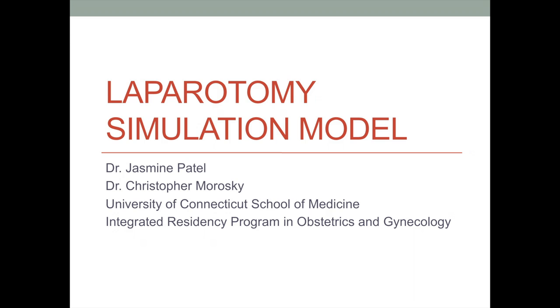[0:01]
Laparotomy Simulation Model.
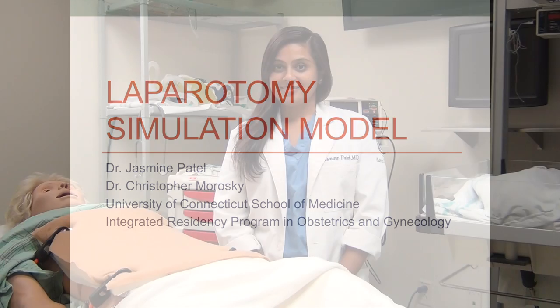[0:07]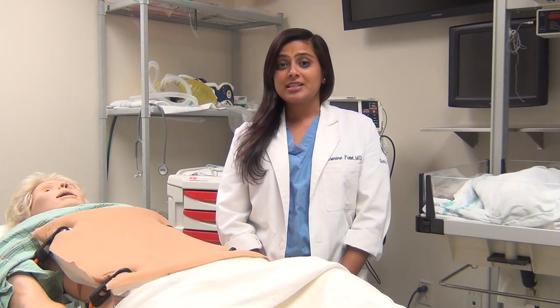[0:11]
Hello, my name is Jasmine Patel, and I am one of the obstetrics and gynecology residents at the University of Connecticut. In this video, we will introduce you to a simulation abdominal wall model that we use to teach our students and residents the techniques of laparotomy.
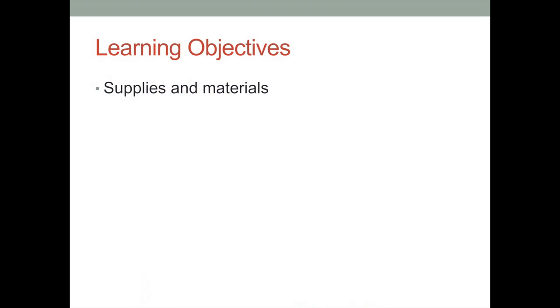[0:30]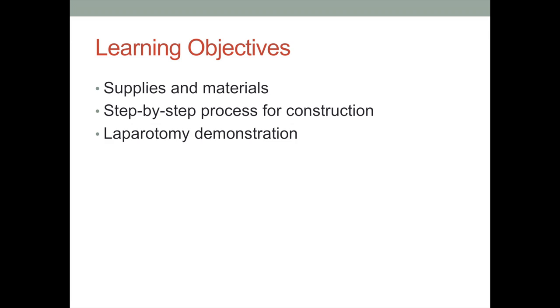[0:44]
The learning objectives of this video are as follows. Review the list of supplies and materials that you will need to create the laparotomy simulation model. Show the step-by-step process of constructing the laparotomy model. And demonstrate how the laparotomy model can be used to simulate a Pfannenstiel laparotomy.
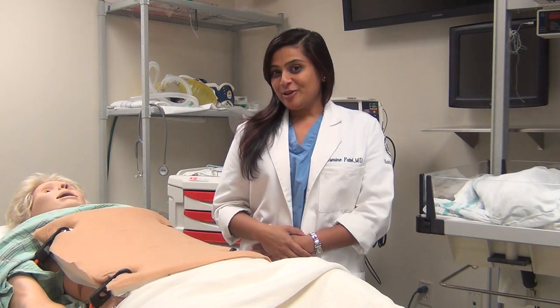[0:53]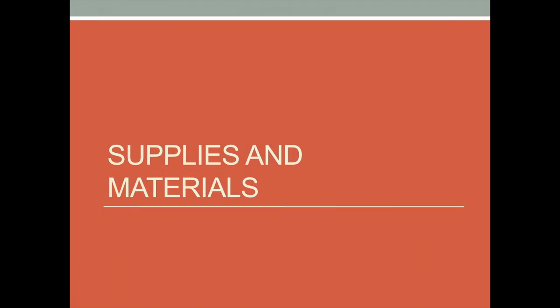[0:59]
The first thing that you will need to do is to plan a trip to your local fabrics or craft store. Now, we're going to take a look around and make a list of the items that you will need and about how much they will cost.
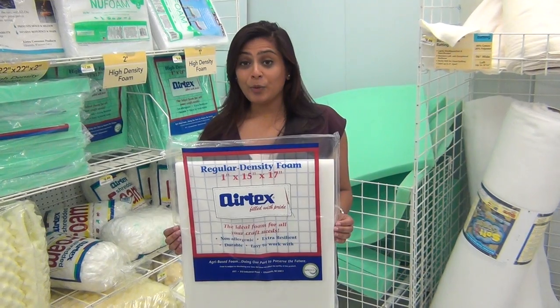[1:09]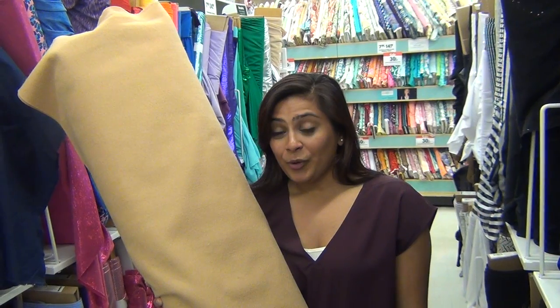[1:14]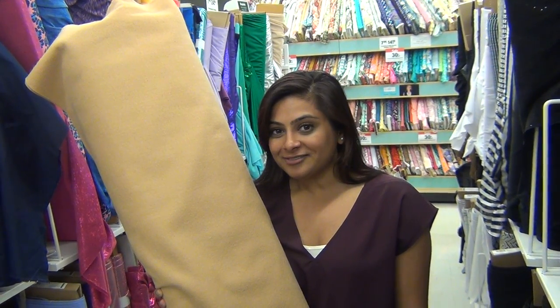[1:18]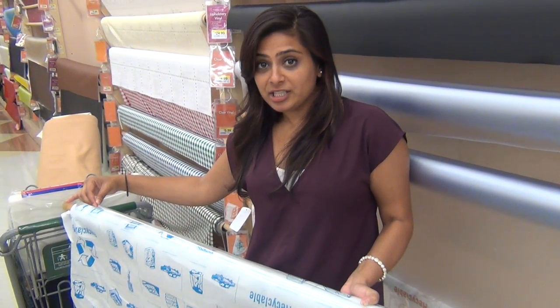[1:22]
1 1-inch regular density foam chair cushion. 1 20 by 20 inch piece of felt at about $6 per yard. 1 20 by 20 inch piece of 4-gauge clear vinyl at about $3 per yard. 1 20 by 20 inch piece of maroon headliner, about $11 per yard. 1 20 by 20 inch piece of blackout ivory curtain lining at about $7 a yard.
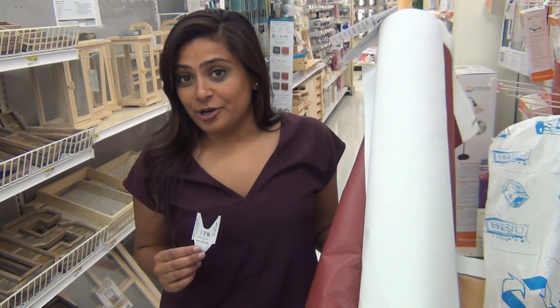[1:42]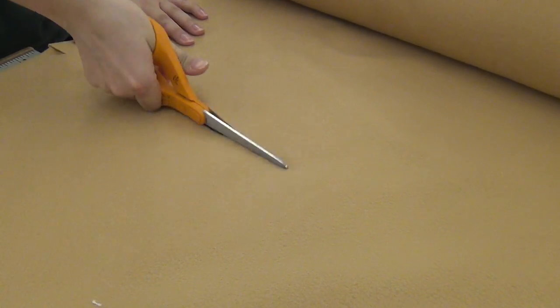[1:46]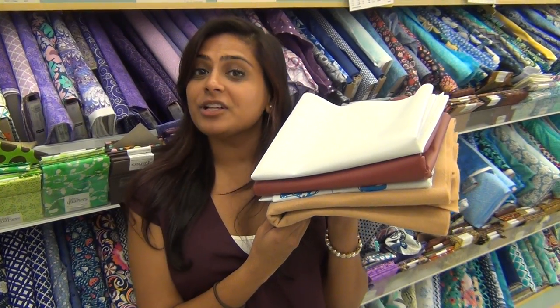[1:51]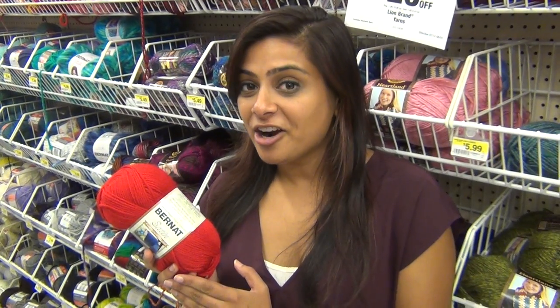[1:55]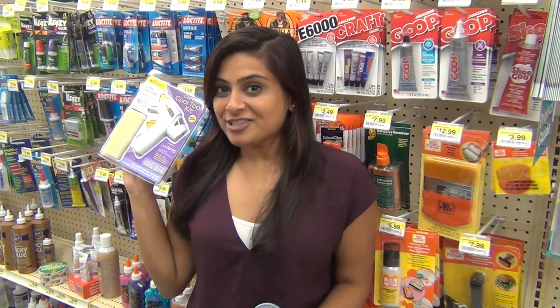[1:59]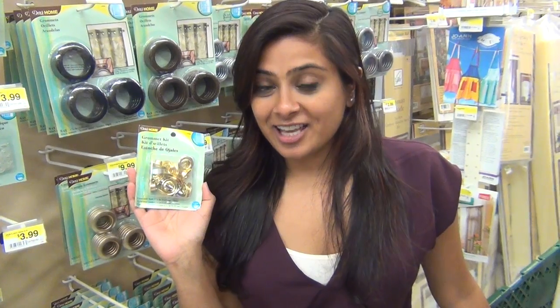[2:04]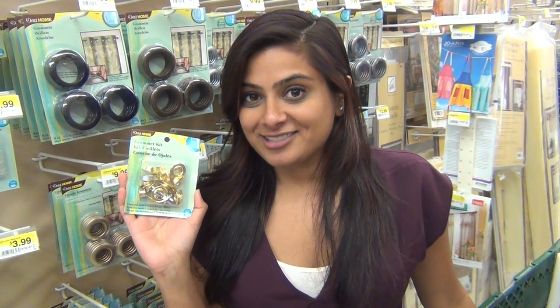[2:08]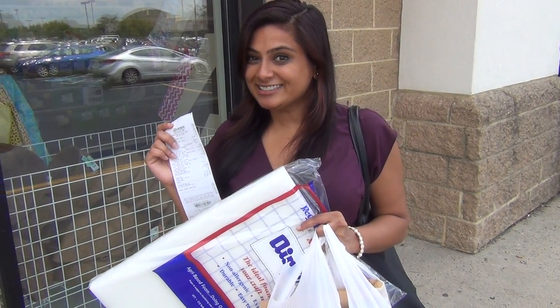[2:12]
And in case you didn't know, you're gonna need to get all of this material cut. And this is what the materials will look like after they've been cut. A small bundle of red yarn at about $4. A small glue gun for $7 and spray glue for $15. A grommet kit with 10 grommets and an anvil for about $10. And you can get all of this for $40 with a coupon.
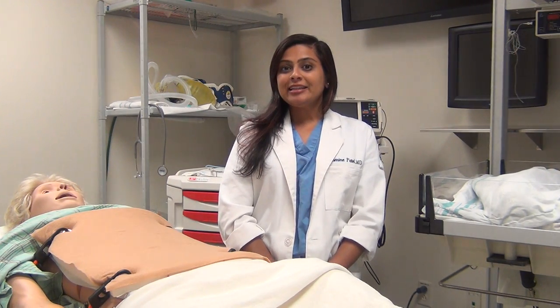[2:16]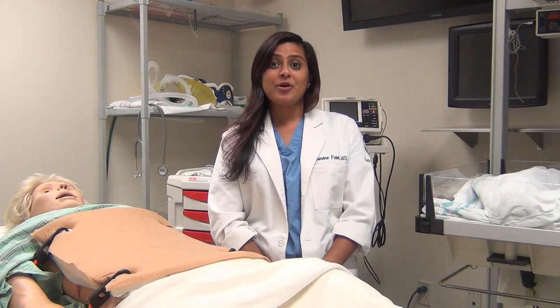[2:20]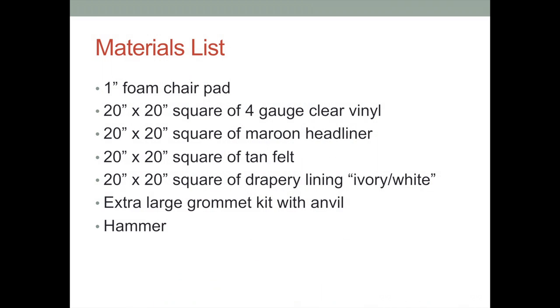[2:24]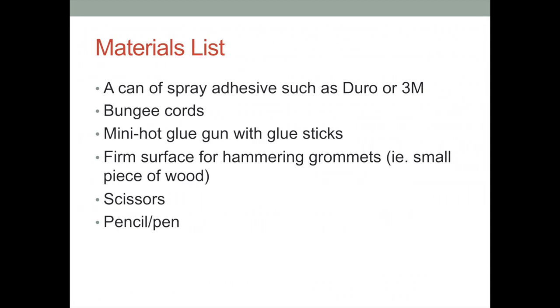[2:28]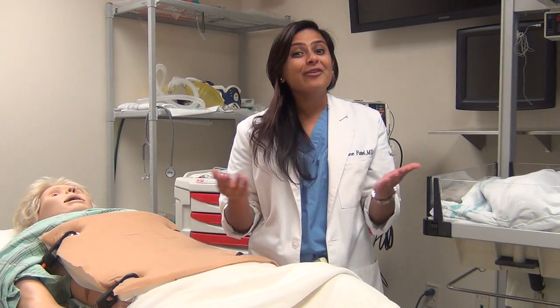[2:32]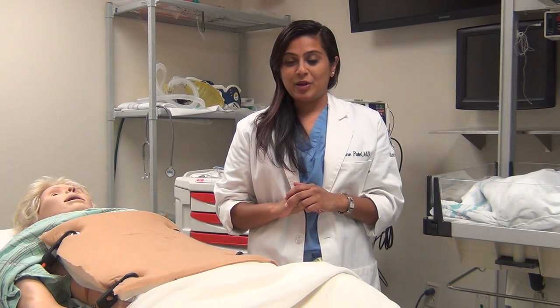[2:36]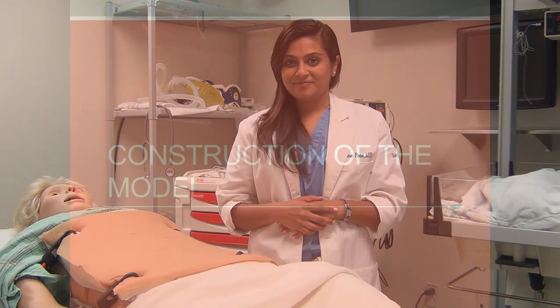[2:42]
On the next two slides, we will provide you with a written list of the materials that you will need so that you can pause the video and copy down your own shopping list. Now it's time to start putting everything together. In this next segment, we will go through a step-by-step process for constructing this laparotomy model.
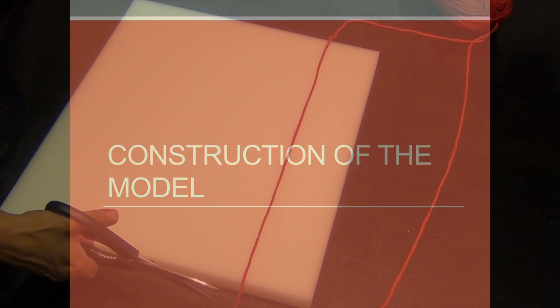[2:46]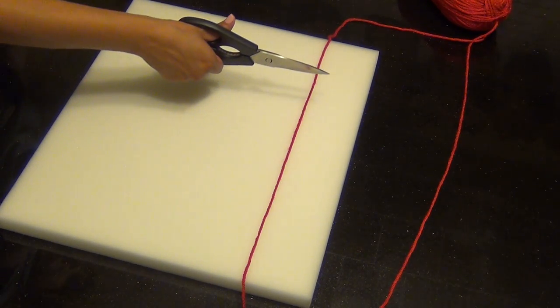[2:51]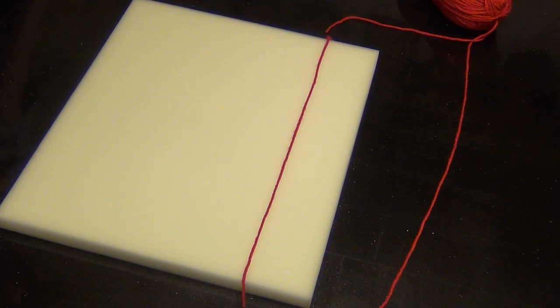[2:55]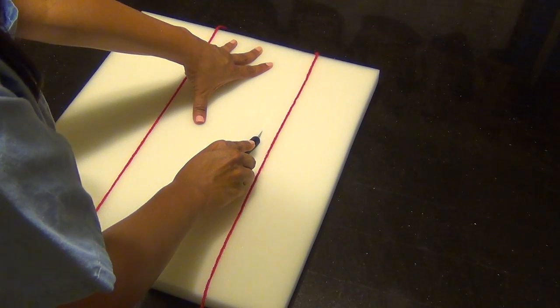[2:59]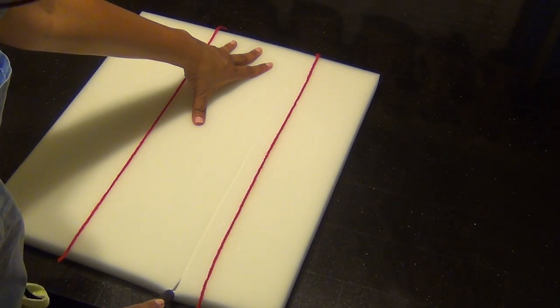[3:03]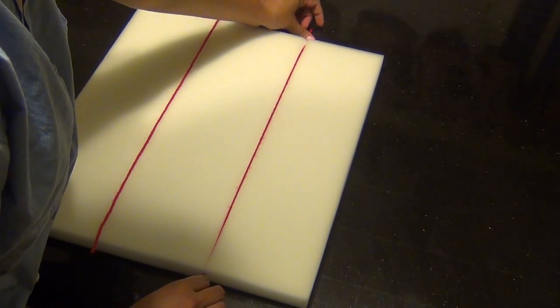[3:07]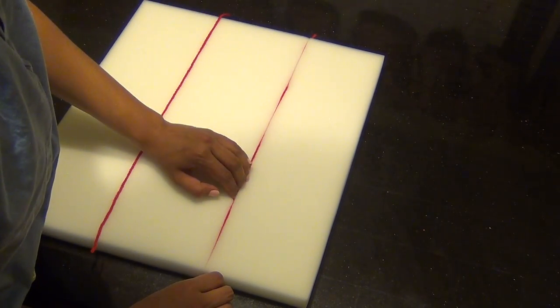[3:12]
Cut 2 pieces of red yarn the length of the chair cushion. These will simulate the superficial epigastric vessels. Incise the chair cushion with an X-Acto knife or scalpel in the area of the superficial epigastric vessels. Place the red yarn into the groove that you just cut into the chair cushion. Do this for both sides.
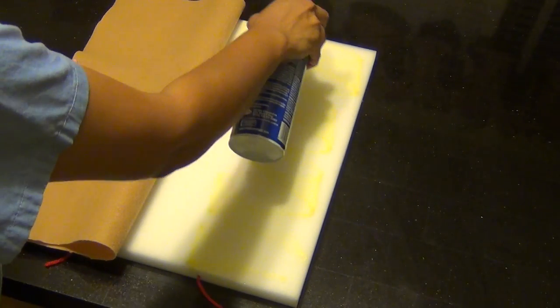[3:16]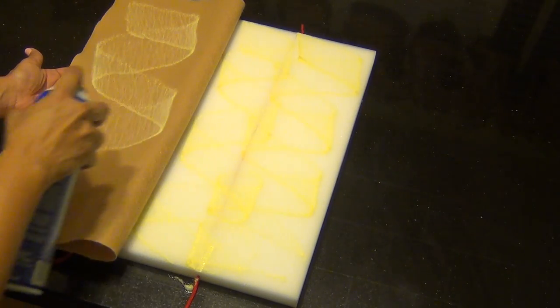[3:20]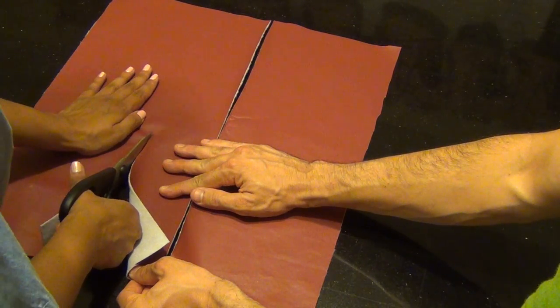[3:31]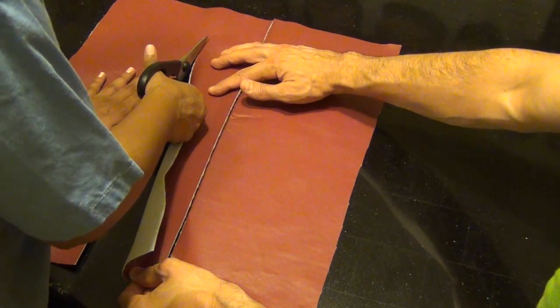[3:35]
Glue the 20 by 20 inch piece of felt to the chair cushion using the spray glue. This works best if you flip over the felt and attach one half at a time. Place this piece aside and allow it to dry. Cut out about a 4-inch wide strip of the 20 by 20 inch piece of maroon headliner to create the individual rectus muscles.
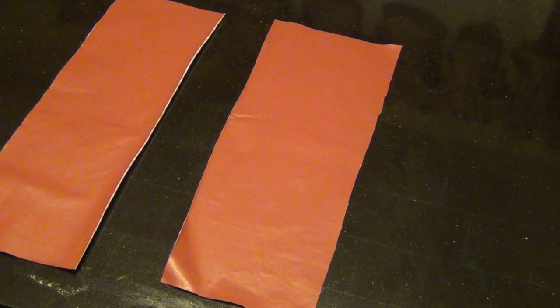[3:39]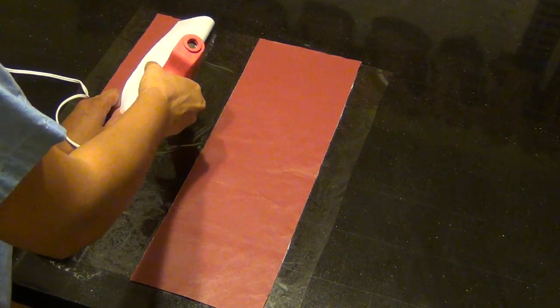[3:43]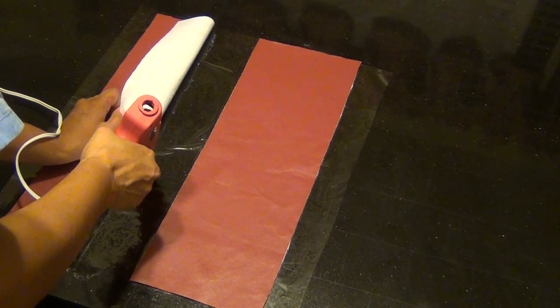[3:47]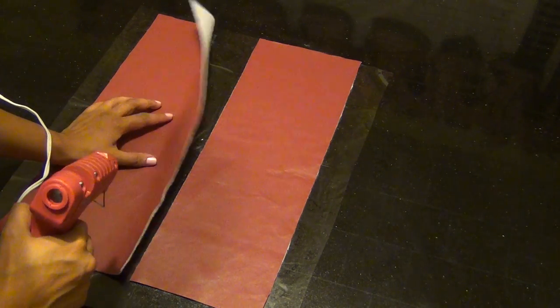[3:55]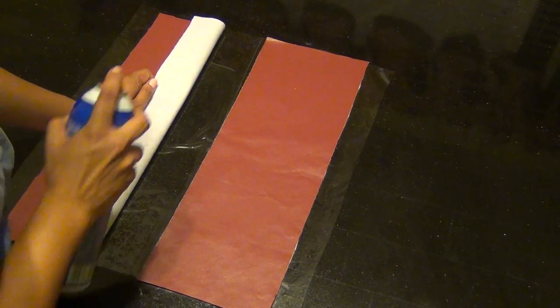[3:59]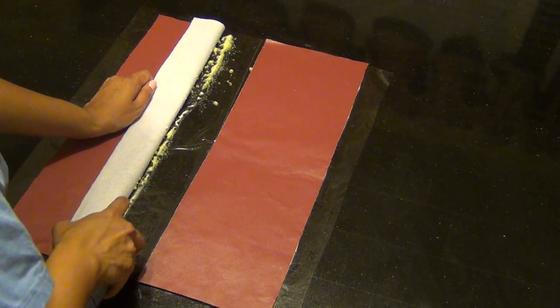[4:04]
Use a glue gun to strongly fix the maroon headliner to the underlying clear vinyl. Place the line of hot glue approximately down the middle third of the strip of maroon headliner. Again, flip over the edge of the material to apply the hot glue to the correct location. Fix the remaining portions of the maroon headliner to the clear plastic vinyl using the spray glue.
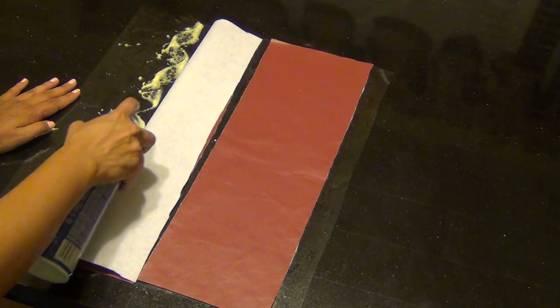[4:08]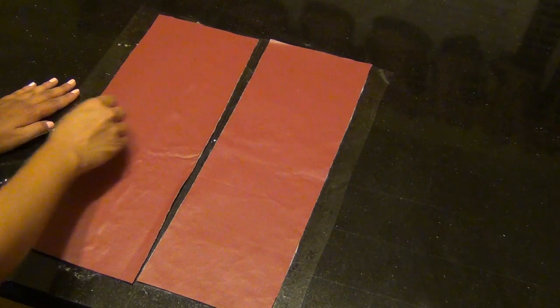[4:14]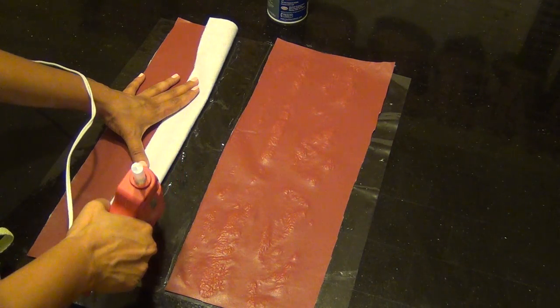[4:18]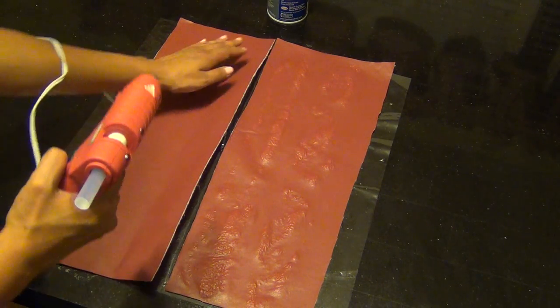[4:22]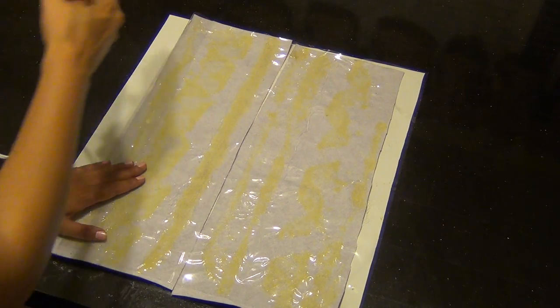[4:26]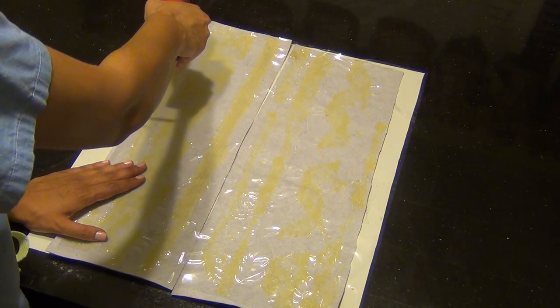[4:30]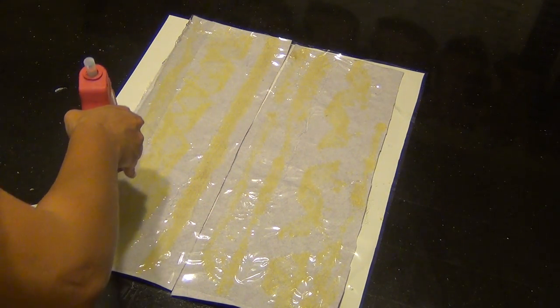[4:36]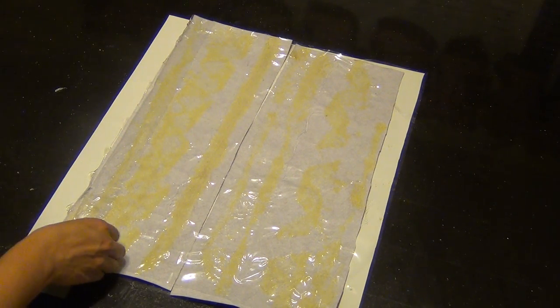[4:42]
Glue the contralateral rectus muscle to the underlying peritoneum in a similar fashion using the glue gun followed by the spray glue. To attach the rectus muscles and peritoneum to the fascia, flip over the dried clear vinyl so that the maroon headliner is in contact with the 20 by 20 inch piece of ivory curtain lining.
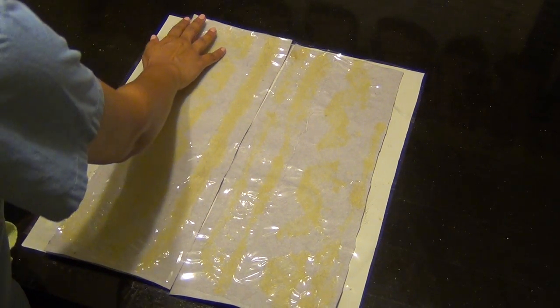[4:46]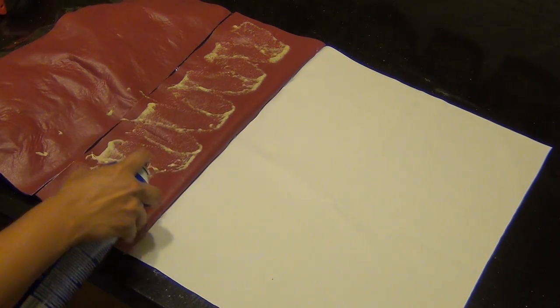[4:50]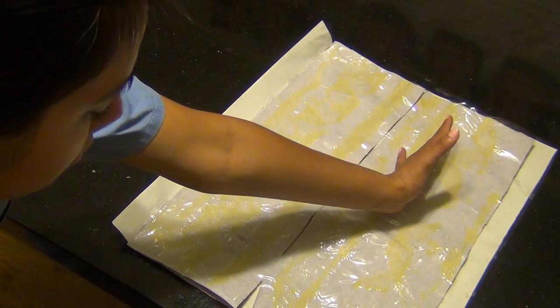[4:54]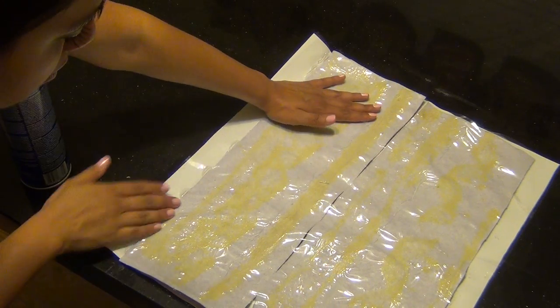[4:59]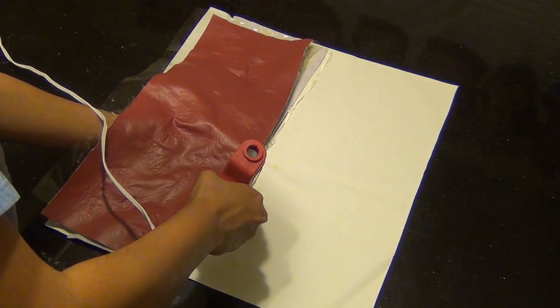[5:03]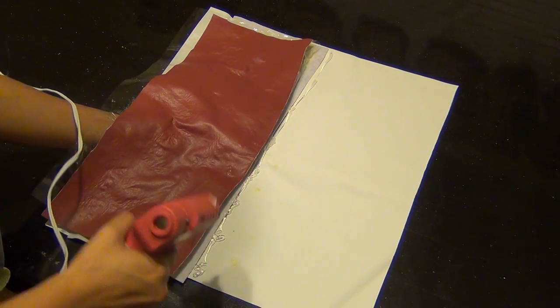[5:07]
Then, flip over the lateral edge of the vinyl and fix it to the curtain lining using a line of hot glue. Flip over the entire rectus peritoneum layer and then apply spray glue up until the medial border of the rectus muscle. Flip this layer back over and smooth it down to stick the glue to the curtain liner. Place another line of hot glue in the area of the linea alba to stick the clear vinyl directly to the curtain liner.
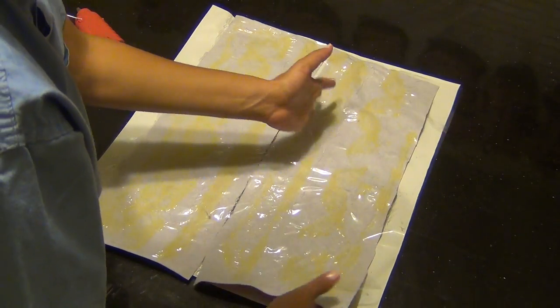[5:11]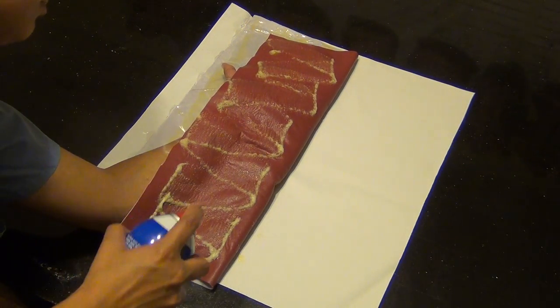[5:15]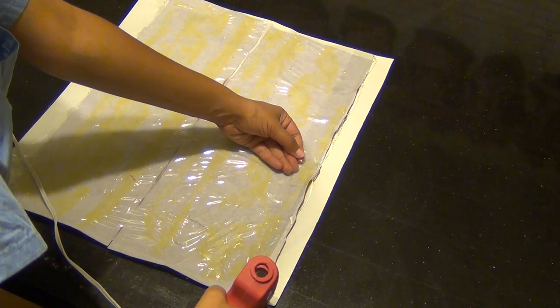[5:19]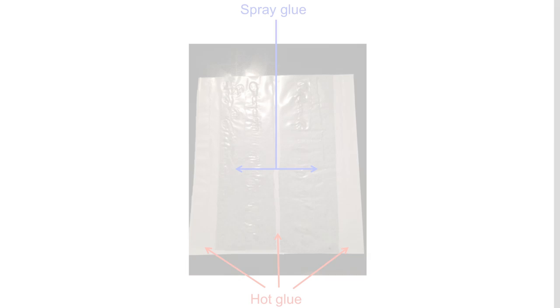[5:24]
Finish this layer off by first using spray glue to fix the other rectus muscle to the fascia, and then hot glue on the edge to hold everything together. Since this layer is the most confusing, here is a diagram of the locations to place the hot glue and the spray glue in order to attach the rectus muscles and peritoneum to the fascia.
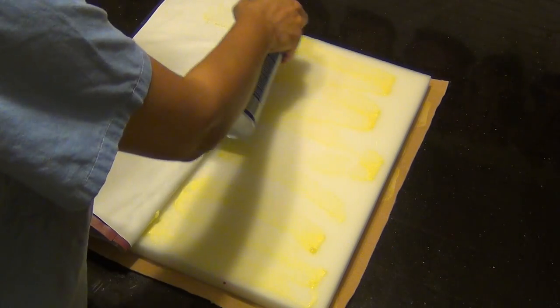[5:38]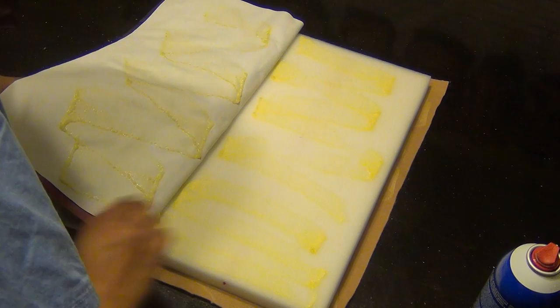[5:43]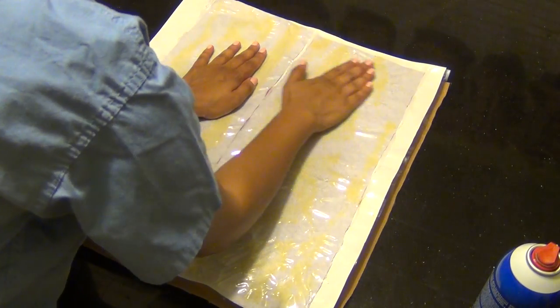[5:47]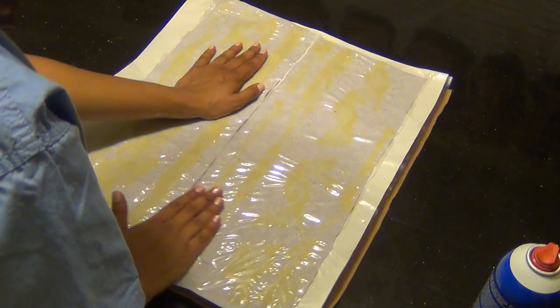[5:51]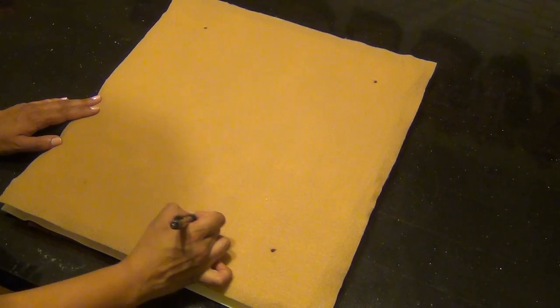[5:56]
Once the above layer has had a chance to dry, you will attach it to the underside of the chair cushion using spray glue. This again is best done by flipping over the curtain liner layer and gluing one half at a time. After all of the layers have had a chance to dry, mark with a pen the location for the grommet holes.
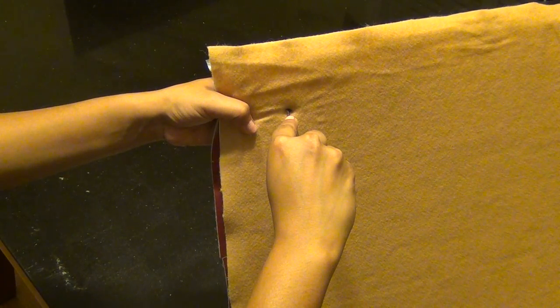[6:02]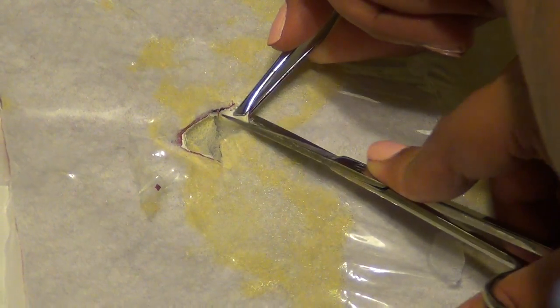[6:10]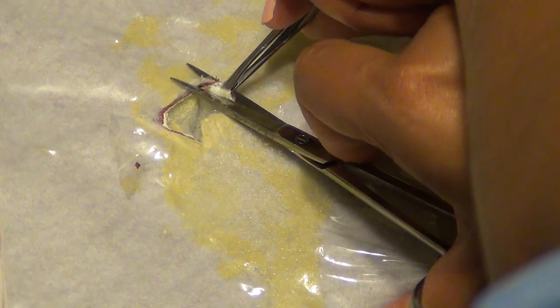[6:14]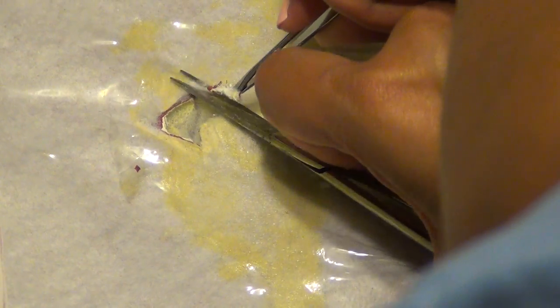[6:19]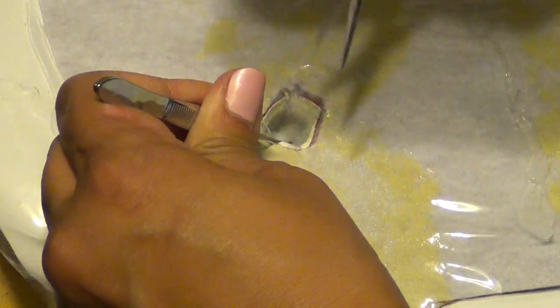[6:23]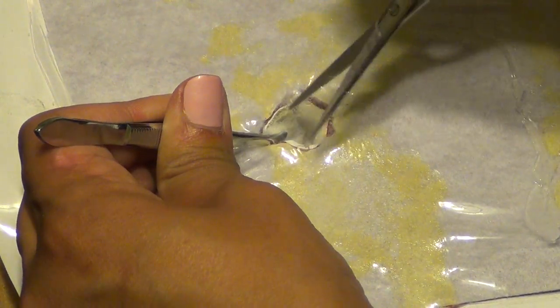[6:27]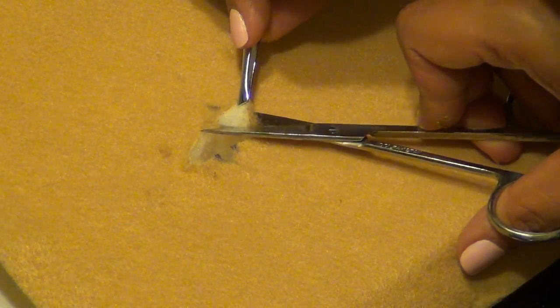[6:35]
Next, use a pair of fine scissors to puncture through all layers to get the grommet holes started. The same scissors with tweezers can be used to excise a 2 cm circular hole through the vinyl, headliner, and curtain. The underlying chair cushion is then dissected out and removed with scissors and tweezers. Finally, the model is flipped over and a 2 cm circular piece of the felt is cut out with the scissors, allowing for a finger to be easily passed through all the layers of the model.
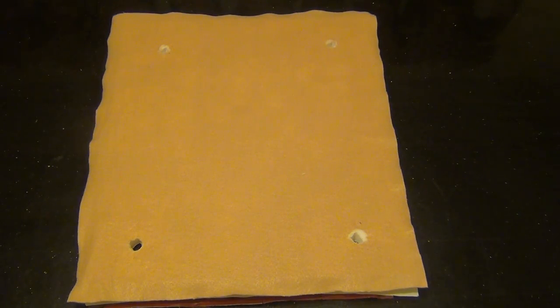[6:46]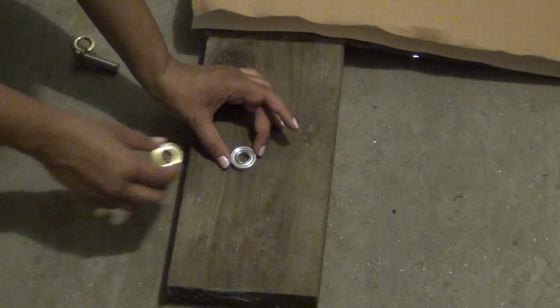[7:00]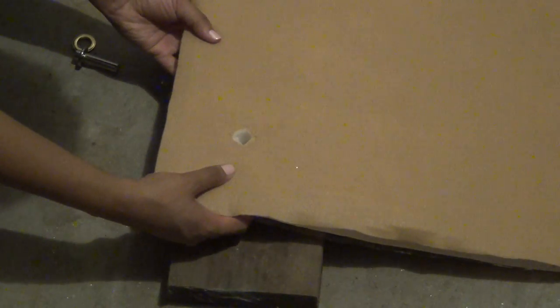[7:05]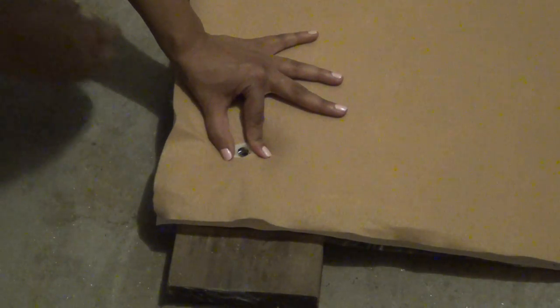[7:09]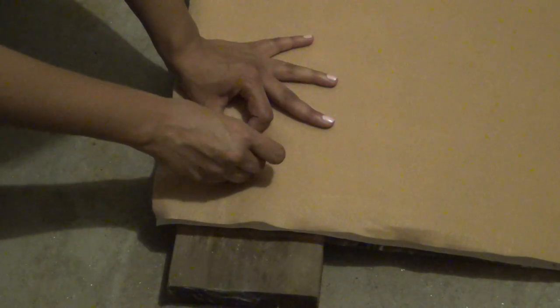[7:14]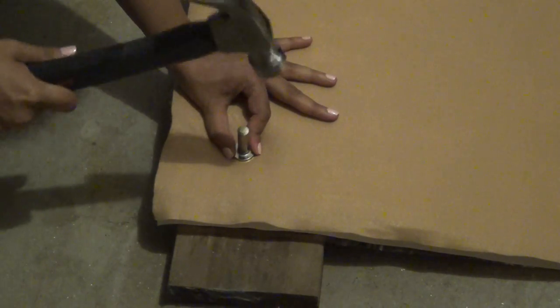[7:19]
This is what the model will look like when all 4 grommet holes have been cut out. It is important to remove all of the 2 cm of material from each hole in order for the grommets to fit appropriately. Finally, over a firm surface such as a piece of wood on the garage or basement floor, apply the 2 halves of the grommets onto either side of the grommet hole. Then, hammer into place using the small metal anvil which comes in the grommet kit. Perform this step to place grommets in all 4 of the grommet holes.
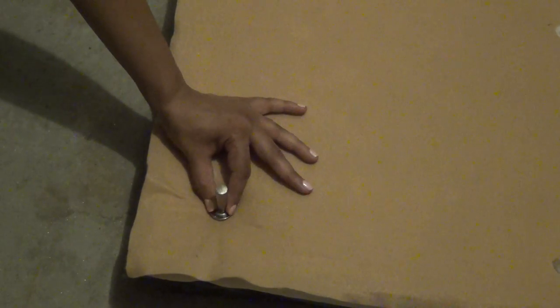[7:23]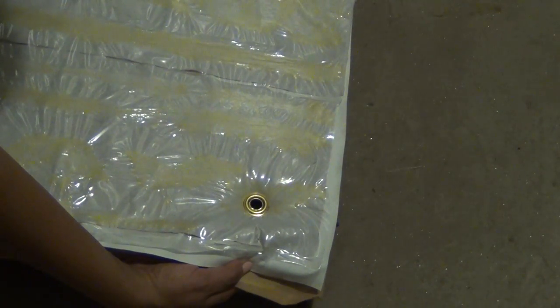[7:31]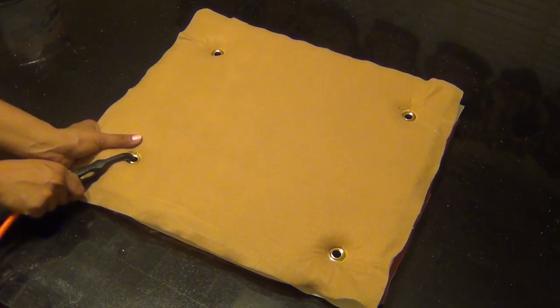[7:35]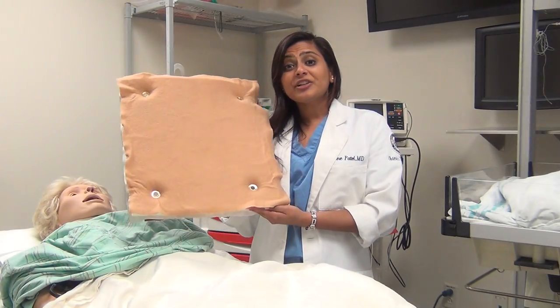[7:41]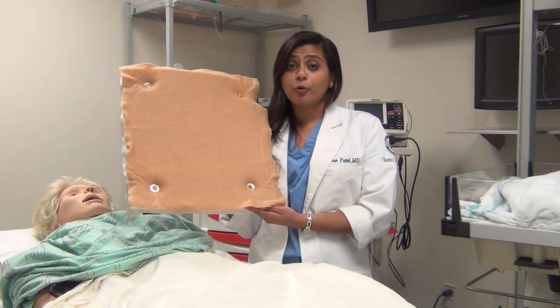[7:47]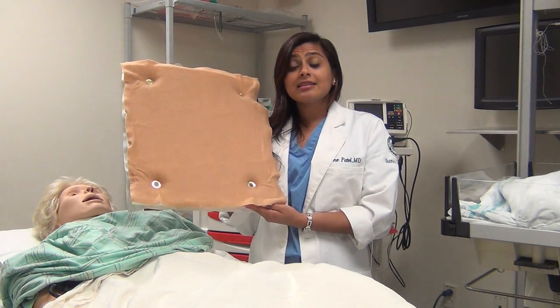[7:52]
The model is eventually held into place over a simulation mannequin using a bungee cord passed through the grommets. This is what our simulation model looks like when it is all done and dry. Each model takes about 30 to 45 minutes to create and must dry overnight. In this last segment, we will perform a Pfannenstiel laparotomy on our simulation model.
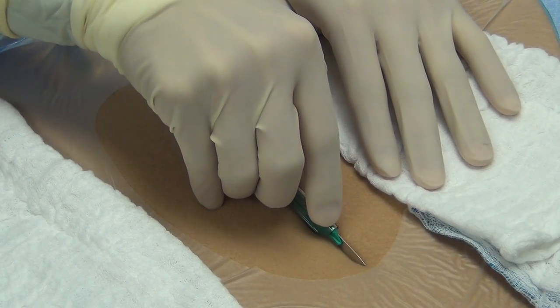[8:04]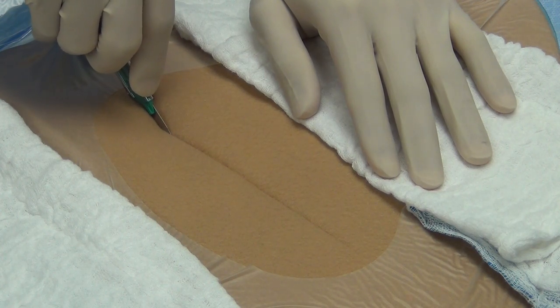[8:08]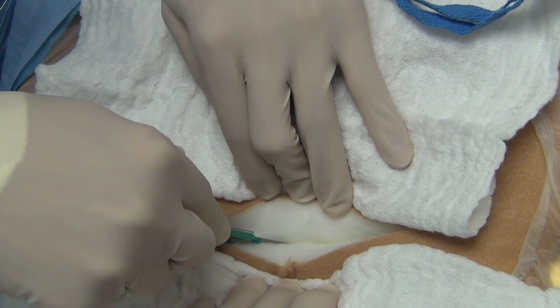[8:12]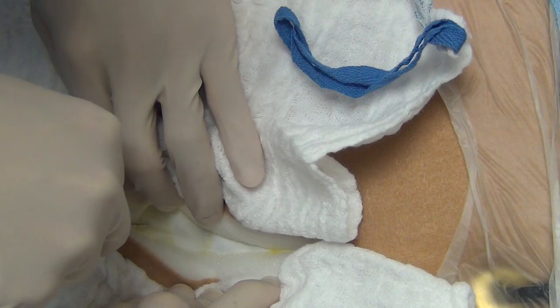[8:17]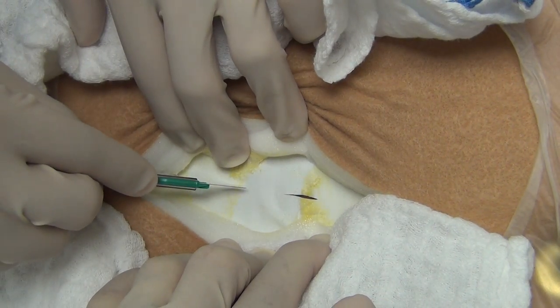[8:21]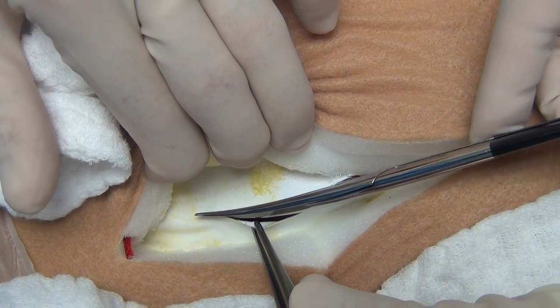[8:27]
A transverse skin incision is made with the scalpel. The subcutaneous adipose tissue is dissected down to the fascial layer. Care is taken to avoid the superficial epigastric vessels. The fascia is cut in the midline using the scalpel. The fascial incision is extended with scissors.
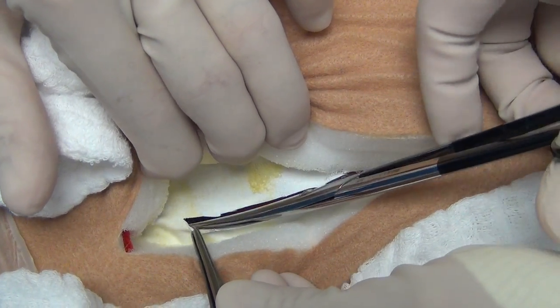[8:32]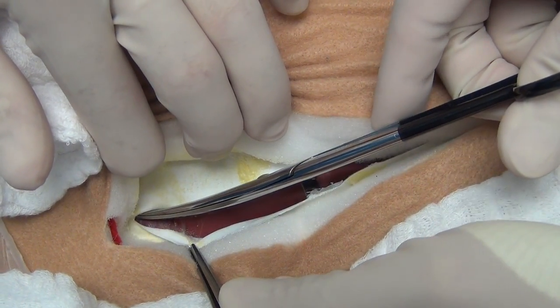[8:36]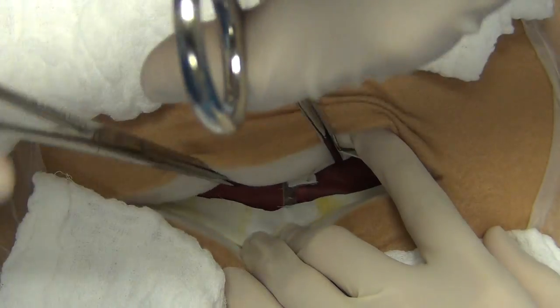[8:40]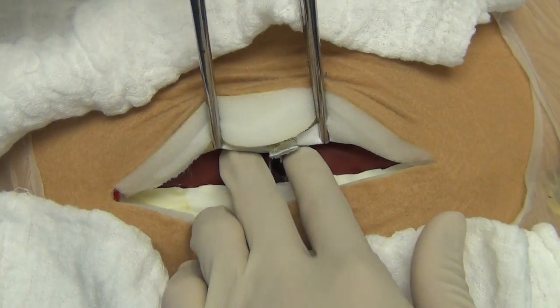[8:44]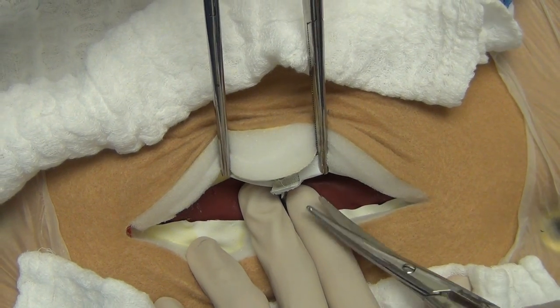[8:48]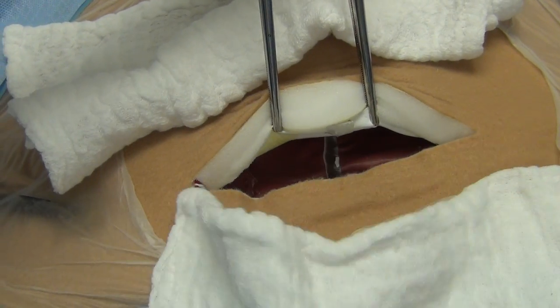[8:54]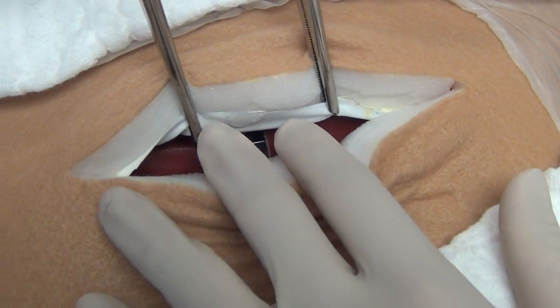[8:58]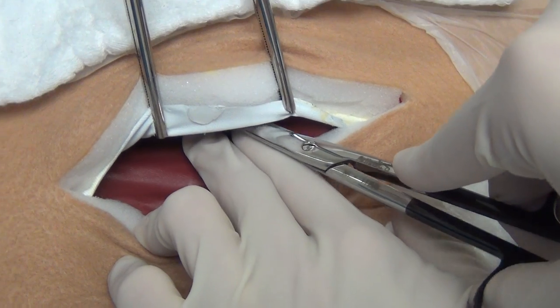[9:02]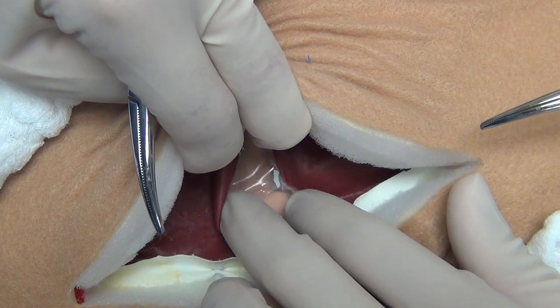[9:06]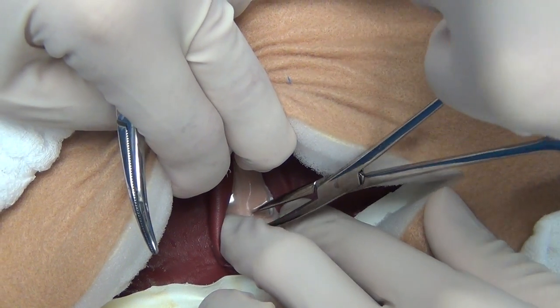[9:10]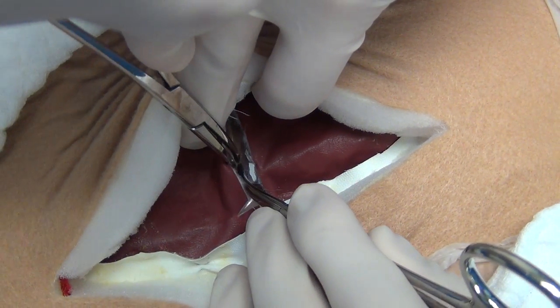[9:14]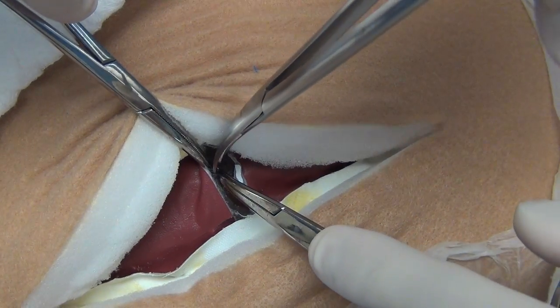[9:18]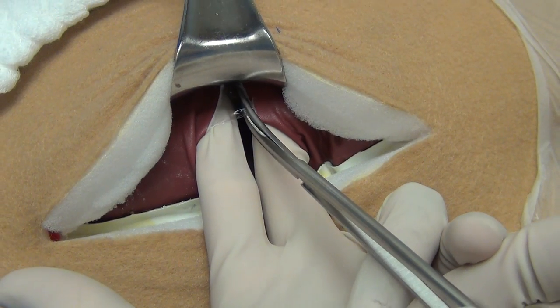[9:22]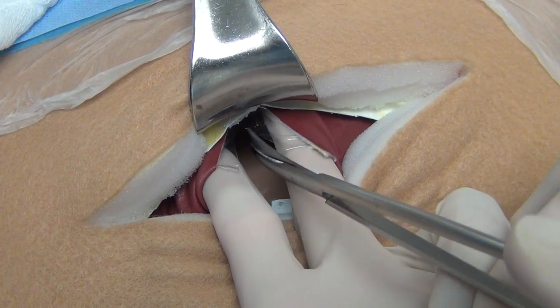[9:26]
The superior edge of the fascia is grasped with Kocher clamps, elevated, and the rectus muscles are dissected off. The inferior aspect of the rectus muscles and fascia are dissected in a similar fashion. The rectus muscles are separated in the midline to expose the parietal peritoneum. The peritoneum is grasped with 2 small clamps and entered sharply with scissors. The peritoneal incision is extended superiorly and inferiorly, and the laparotomy is complete.
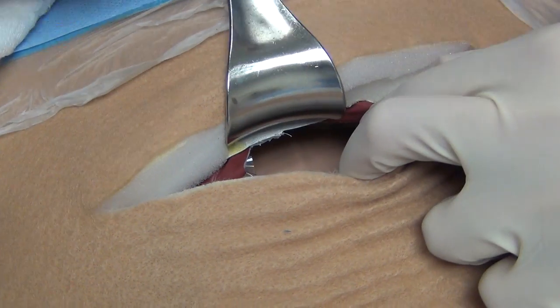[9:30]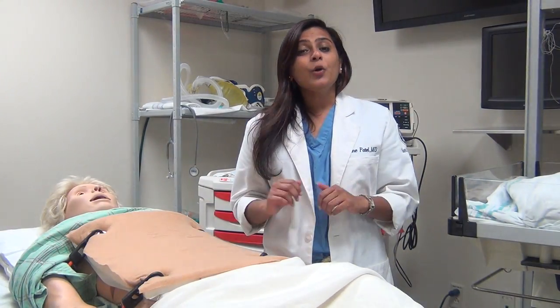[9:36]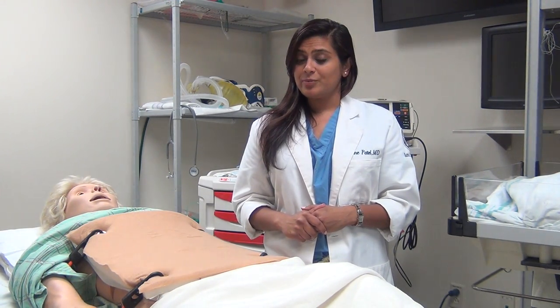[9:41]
That's about it. We hope you enjoyed this video on the construction and use of a laparotomy simulation model. Have fun making your own, and good luck on your teaching and training.